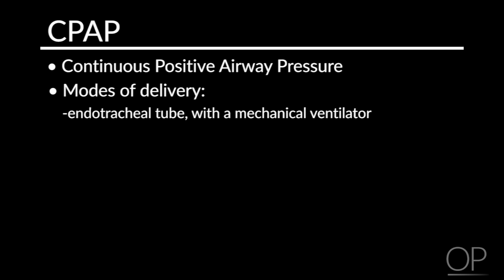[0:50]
Hi, my name is Tracy Walbrink, and I'm a Clinical Fellow in Pediatric Critical Care at Children's Hospital Boston. Today, I'll be demonstrating how to set up a bubble CPAP system.
CPAP stands for Continuous Positive Airway Pressure. It can be delivered in several different modalities, including via an endotracheal tube with a mechanical ventilator, through a nasal or mask interface in a CPAP machine, or via a bubble CPAP system, which I'll be showing you.
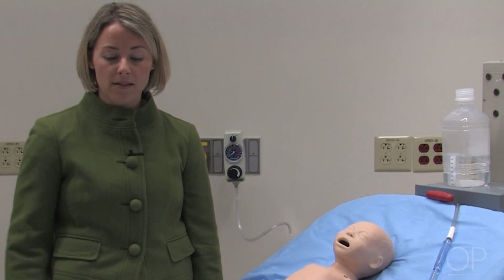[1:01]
I'll be using equipment to set this system up that should be readily available. However, you may need to modify the equipment and resources based on what you have available in your institution.
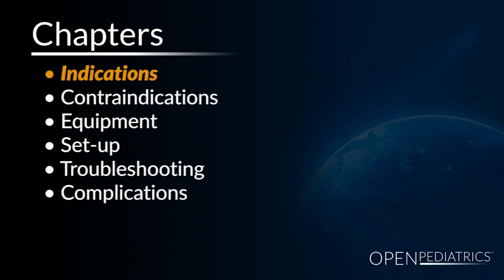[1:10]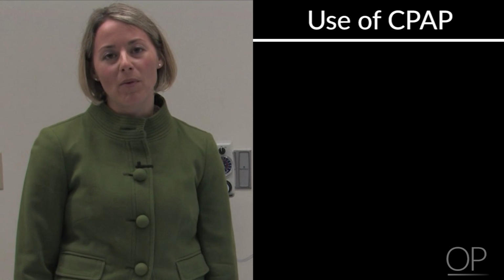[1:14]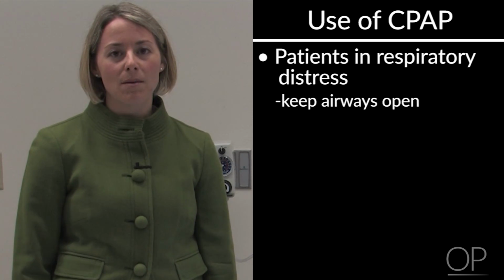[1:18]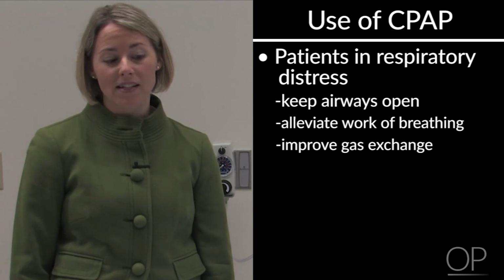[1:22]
Indications. Continuous Positive Airway Pressure can be helpful for patients in respiratory distress. It helps to keep the airways open and helps to alleviate the work of breathing, thus improving gas exchange and making it easier for the patient to breathe.
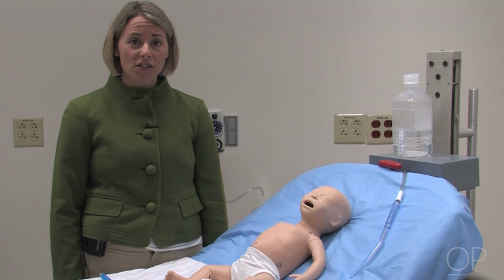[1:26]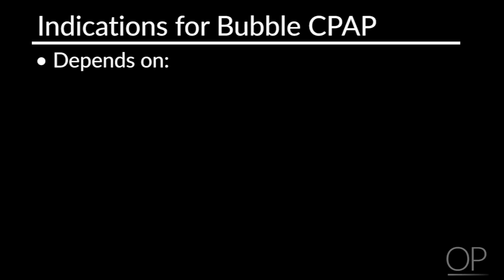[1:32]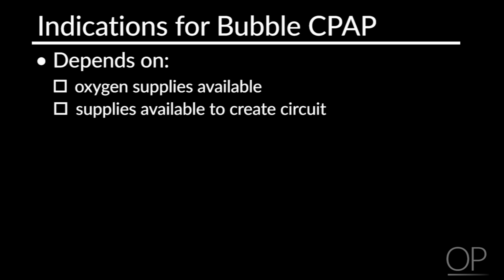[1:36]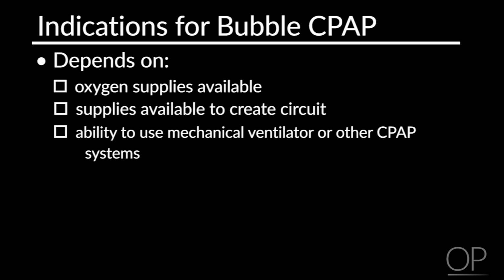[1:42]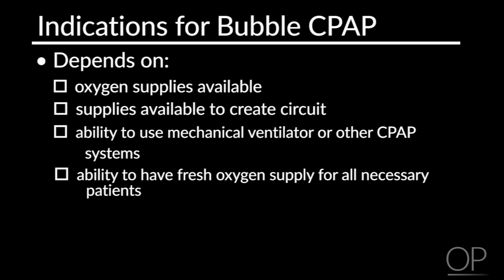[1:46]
At each institution, you'll need to decide what your indications for using bubble CPAP will be. It will depend on the amount of oxygen supplies that you have available, and the amount of supplies to create the circuit. Additionally, it will depend on your ability to use a mechanical ventilator or other CPAP systems, and your ability to have a fresh oxygen supply for all the patients that are necessary.
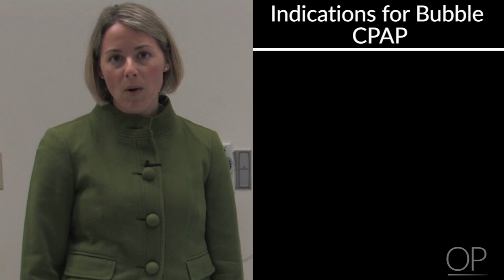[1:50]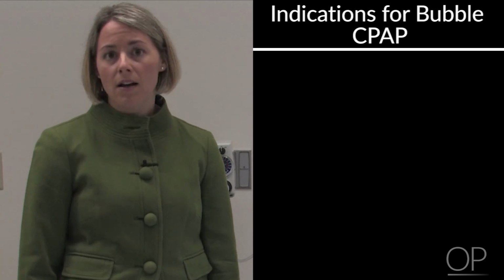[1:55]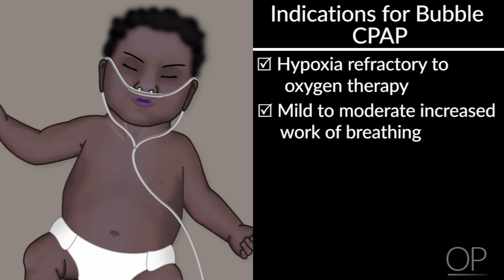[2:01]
In some hospitals, they find it helpful to use this on patients that are hypoxemic, which is refractory to oxygen therapy, or patients with mild to moderate work of breathing. In those patients, it may be helpful to step up from oxygen therapy and try a bubble CPAP interface to improve the work of breathing and gas exchange.
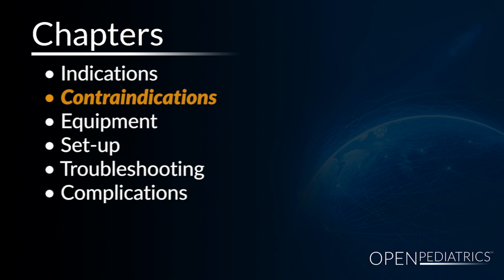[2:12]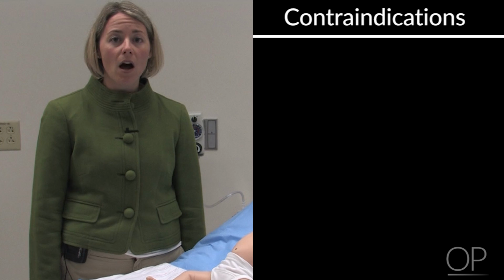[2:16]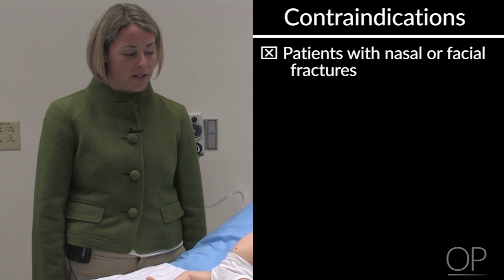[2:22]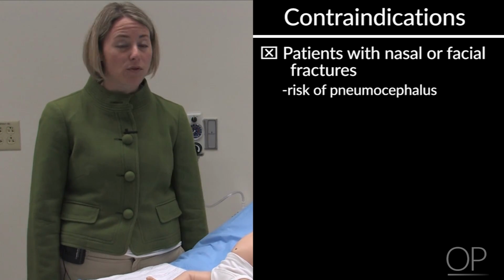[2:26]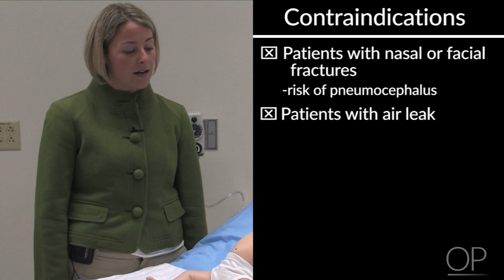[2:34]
Contraindications. There are several patients that you may not want to put on bubble CPAP. Those would be patients that have nasal or facial fractures because you risk causing pneumocephalus with using the positive airway pressure. You would also want to caution the use of bubble CPAP in patients that have air leak, such as pneumothorax or pneumomediastinum.
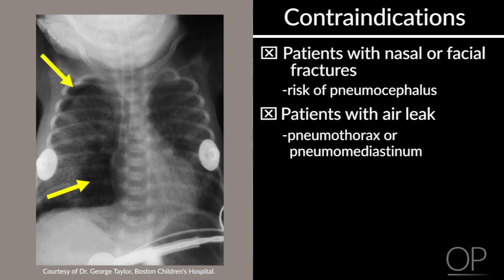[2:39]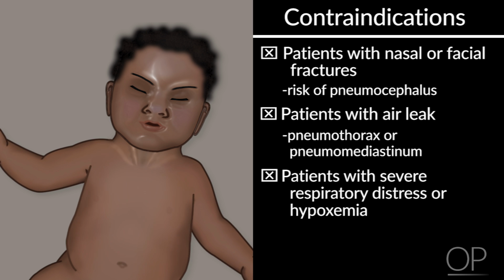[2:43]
And you would also want to consider other modalities if you have a patient that's in severe respiratory distress or severely hypoxic, as bubble CPAP may not be enough to help this patient.
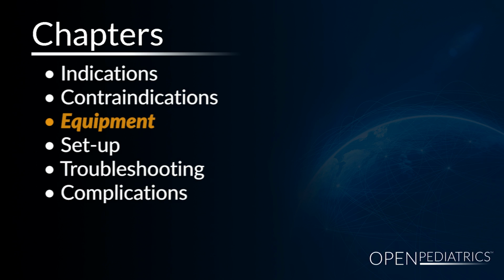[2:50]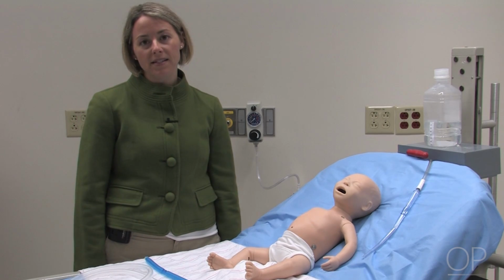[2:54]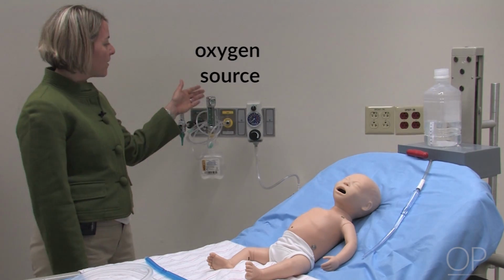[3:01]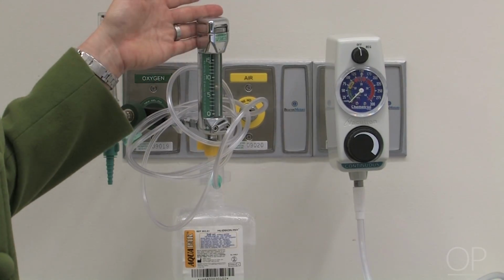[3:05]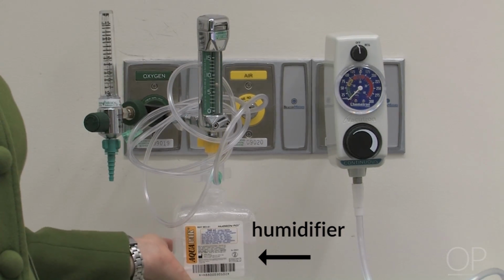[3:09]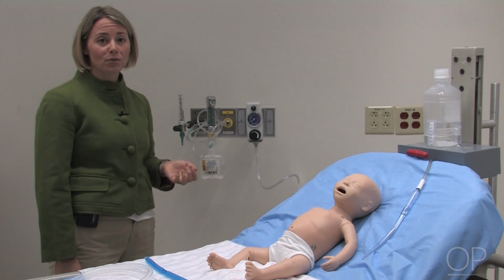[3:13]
Equipment. I'm now going to go over the equipment that's necessary to set up the bubble CPAP system. The first thing that you'll need is an oxygen source, and I have a source here that's connected to my in-wall oxygen. I've also attached a humidifier that will allow humidification to the baby, which will make the system more comfortable for the baby to breathe.
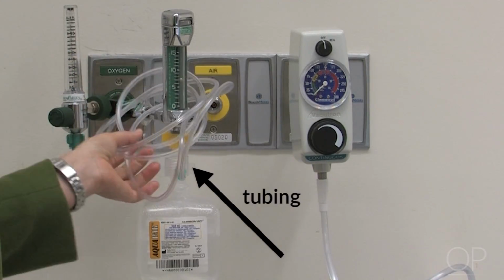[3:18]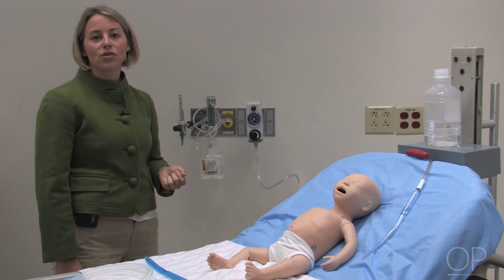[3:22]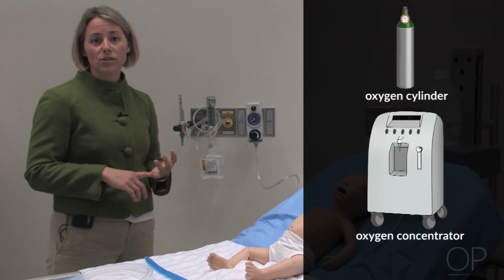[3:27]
You'll need some sort of tubing to connect this to the system. You can also use whatever type of oxygen source you have at your hospital, such as an oxygen cylinder or an oxygen concentrator, as long as you have enough flow to make the system bubble, which I'll explain in a few minutes.
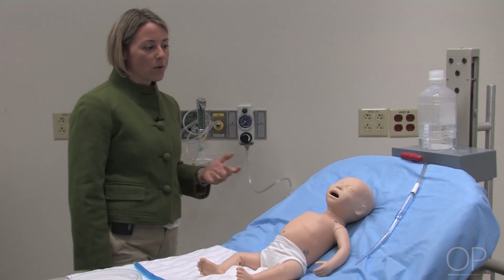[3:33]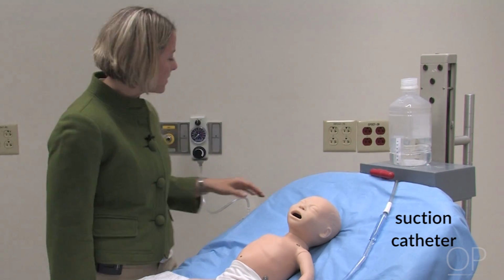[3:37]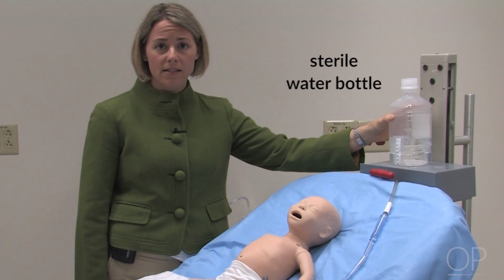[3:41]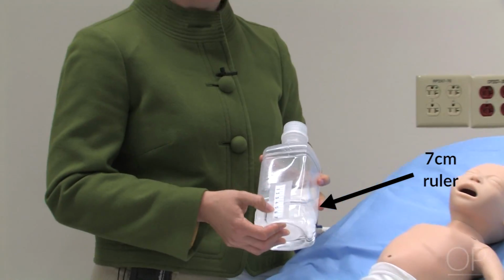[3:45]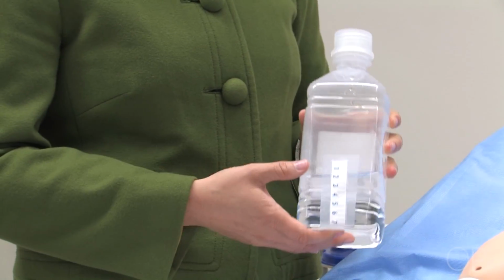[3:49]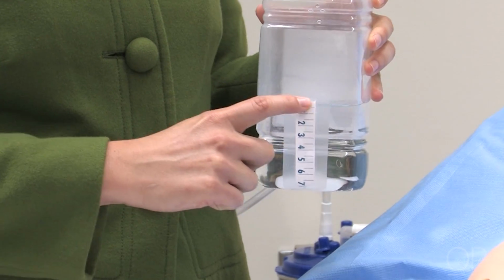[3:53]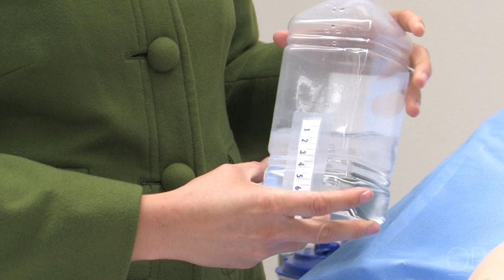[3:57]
What you'll also need is a suction catheter connected to a suction device, and you'll need a sterile water bottle, which here I have attached a 7-centimeter ruler to the bottom of this via tape. I filled the water bottle with sterile water, and as you can see, the meniscus of the water reaches the top of the ruler. You should make sure that you change your water at least once a day to help prevent the spread of infection.
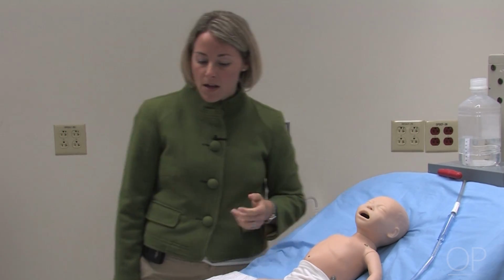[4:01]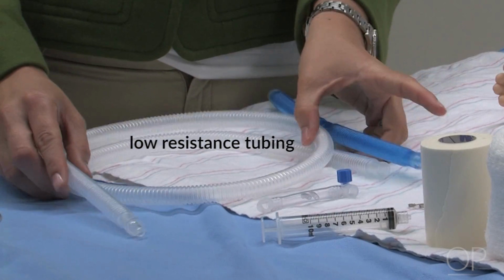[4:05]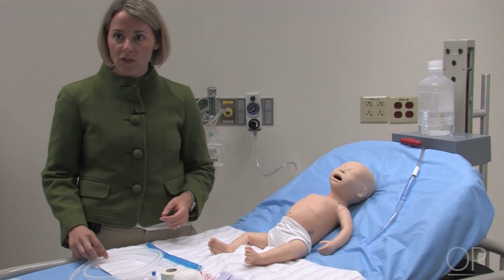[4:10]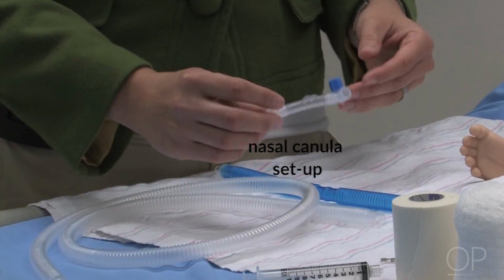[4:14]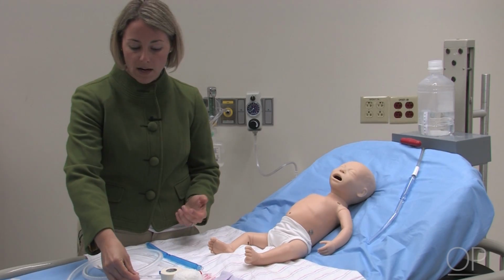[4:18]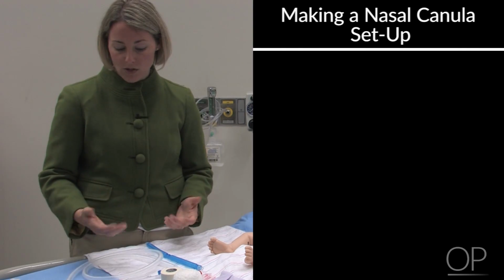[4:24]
The other pieces of equipment that you'll need, you'll need a low-resistance tubing, such as the corrugated tubing that I have here. You'll need two pieces, one for each limb. You'll also need a nasal cannula setup. This one here is a prepackaged bubble CPAP nasal cannula setup that you can purchase. You can also look around your hospital for other pieces of equipment that you can make such a setup.
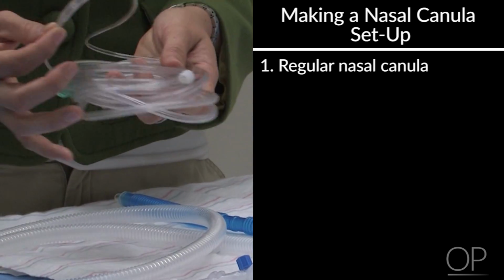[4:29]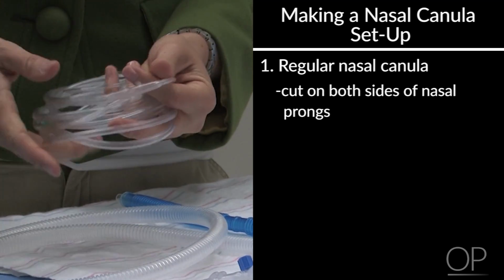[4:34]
And I've made one here using a regular nasal cannula for which I have cut on either side of the nasal prongs.
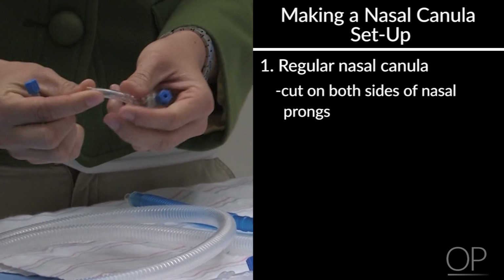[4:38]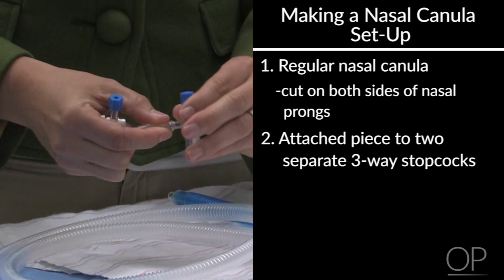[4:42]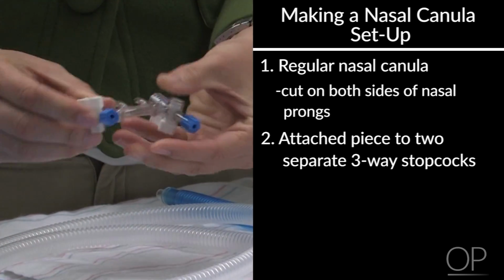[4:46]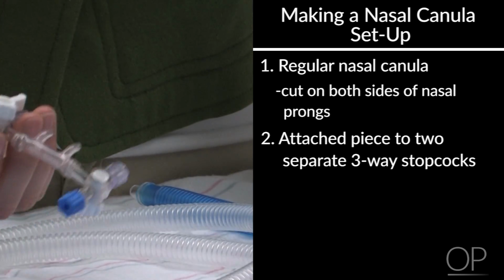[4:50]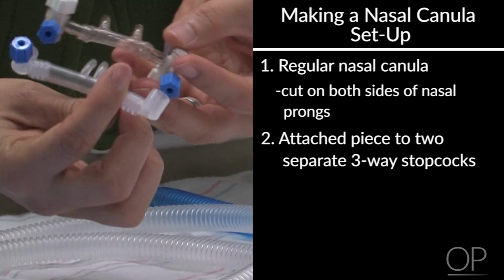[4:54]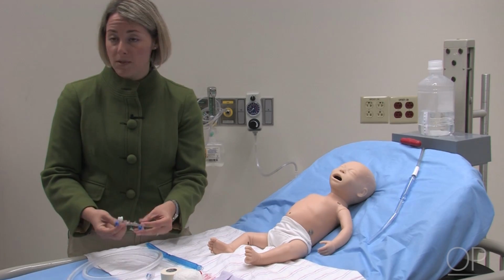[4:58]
And as you see here, I've cut each side, and then I've attached it to two separate three-way stopcocks. And I have a nasal cannula setup that looks very similar to what I have here. You'll notice that the distance between the nasal prongs is different for both of these interfaces, so you'll need to adapt that to which size patient you're using.
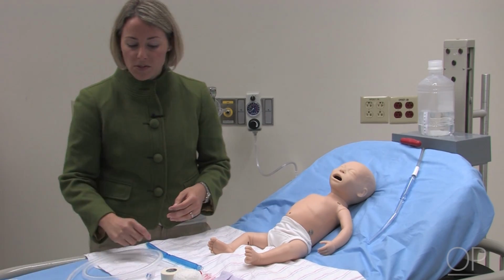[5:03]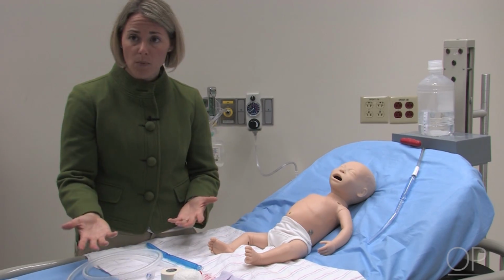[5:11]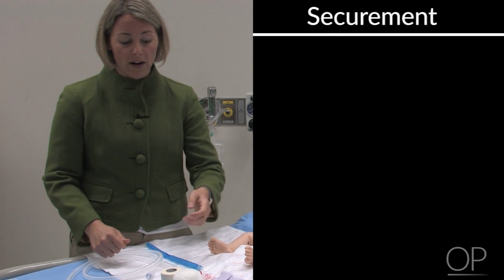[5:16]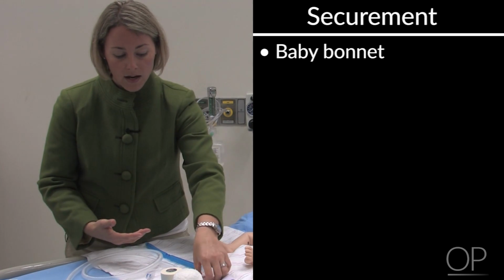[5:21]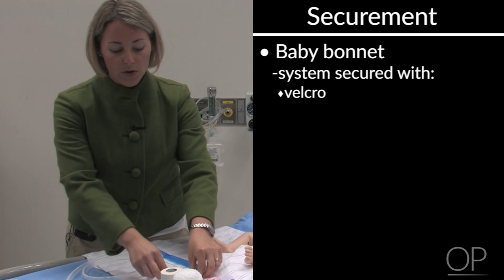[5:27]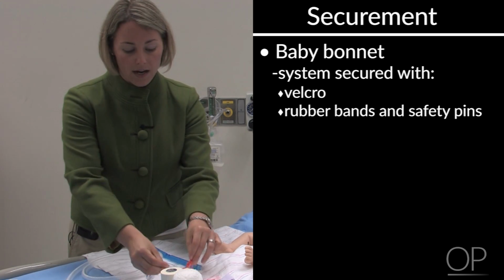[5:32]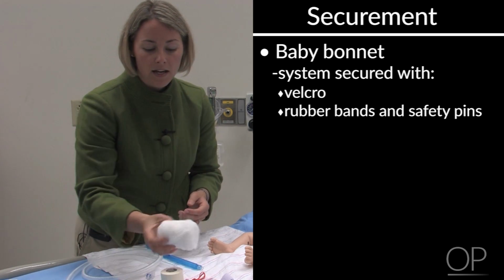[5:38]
You'll also need to have a 10 ml syringe, which will be used to secure the tubing in place in your bottle. And you'll need some way to secure this interface to your patient. There are many commercially available products, such as a baby bonnet that will go over the head, and I'll show you this, which will allow the system to be secured with either Velcro, or you can make a securing system with rubber bands and safety pins. You could also choose to not use a bonnet, and instead use some gauze to wrap the system in place.
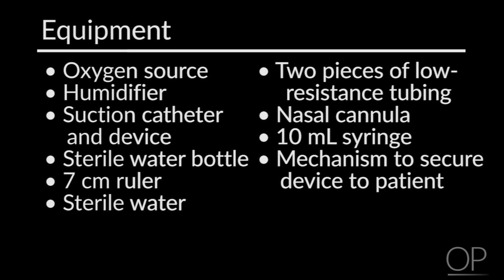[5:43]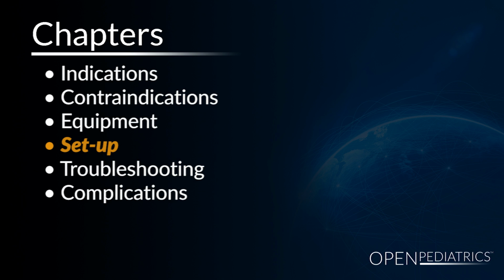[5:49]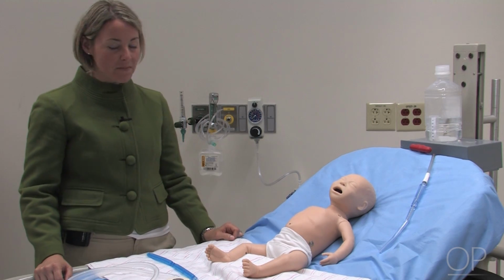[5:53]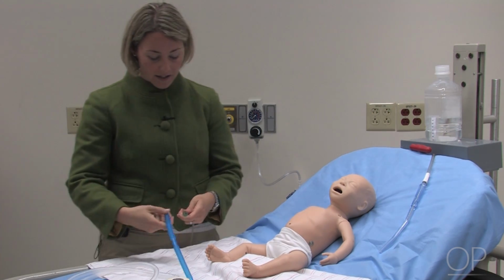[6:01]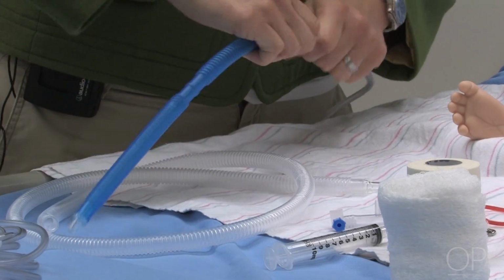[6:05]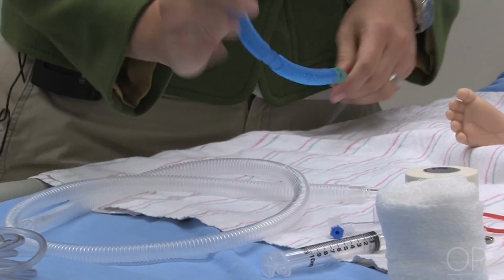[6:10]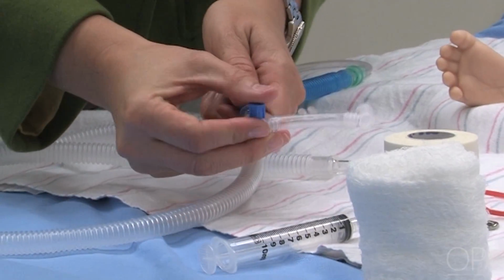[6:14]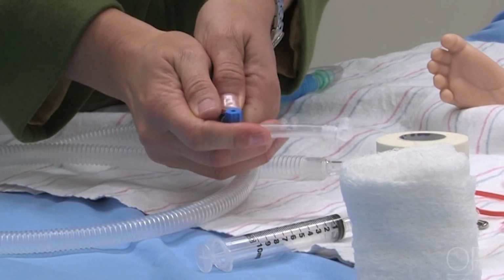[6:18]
Setup. So now I'll demonstrate how to set up your bubble CPAP system. First of all, you'll need to take your oxygen tubing that's connected to your oxygen source, and you'll need to connect it to one piece of your corrugated tubing, ensuring that you have a tight fit and the two tubings are not going to come apart. You'll then take the other end and insert your nasal cannula end into here, again, making sure that it fits tightly.
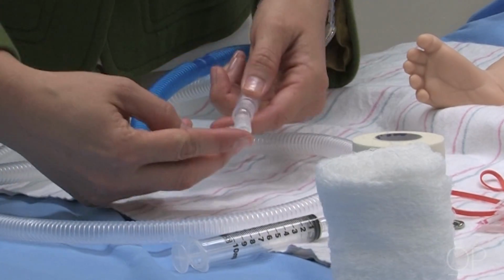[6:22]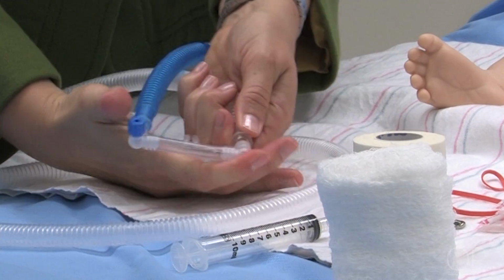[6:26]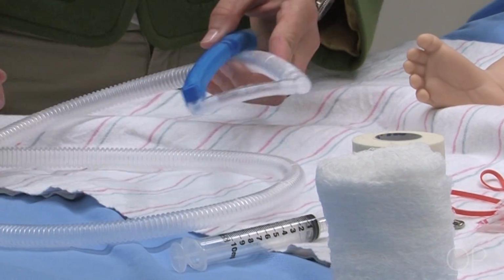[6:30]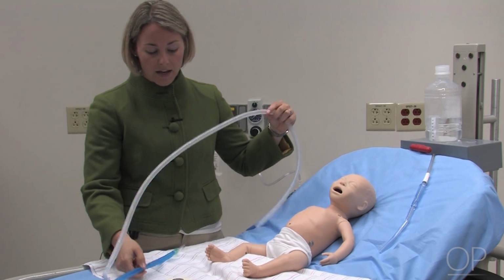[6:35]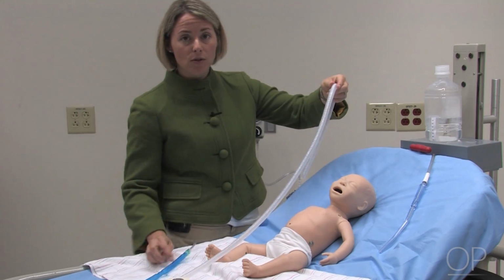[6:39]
You'll then take your other piece of corrugated tubing, inserting that on the other side of your nasal cannula, again, making sure that's tight. And this will be your patient interface. Your next step is going to be to put the end of the corrugated tubing, which is not connected to your oxygen source, into your sterile water bottle.
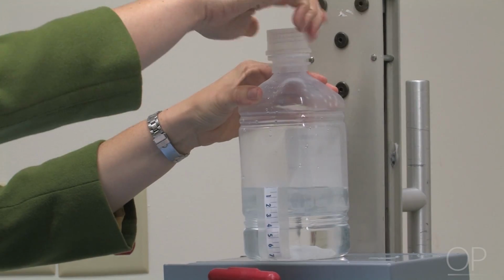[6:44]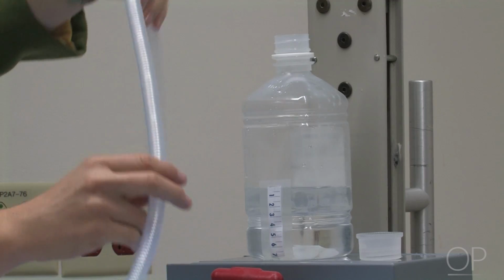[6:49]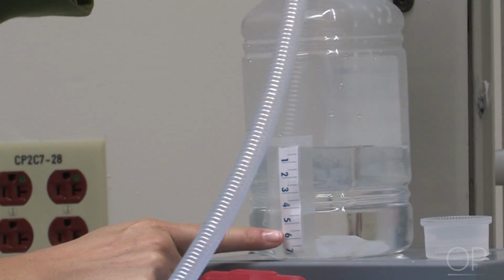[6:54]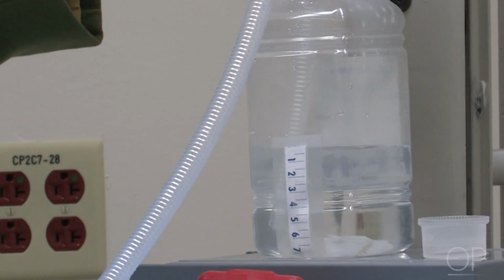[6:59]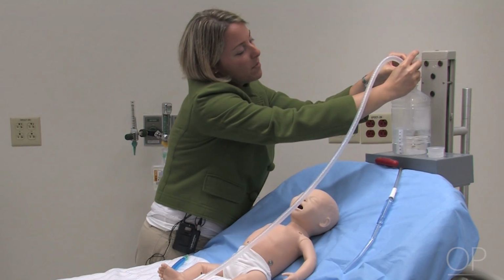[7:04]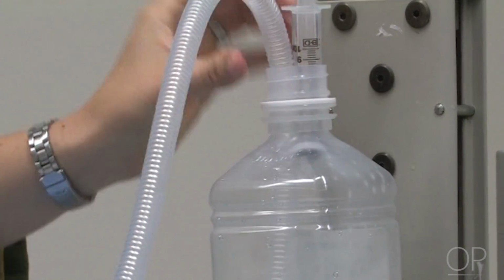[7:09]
So the first thing I'm going to do is unscrew the top of my water bottle, and I'm going to place the end of the tubing into the bottle and into the water to a depth of 5 centimeters. You can see the tip of the tubing is at 5 centimeters. And I'll take my 10 ml syringe, insert it into the top of the bottle. This will help to secure it in place and allow the tubing to stay at 5 centimeters. You also want to make sure that there's space for air to flow out of the water bottle and that you haven't occluded the opening completely.
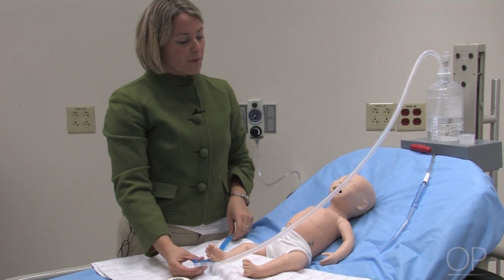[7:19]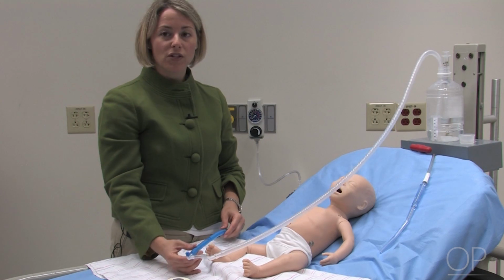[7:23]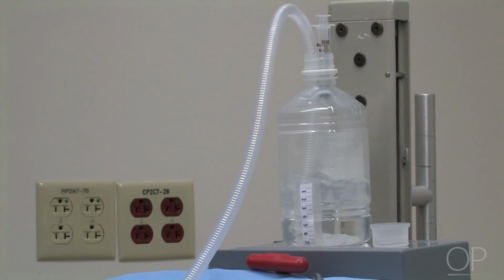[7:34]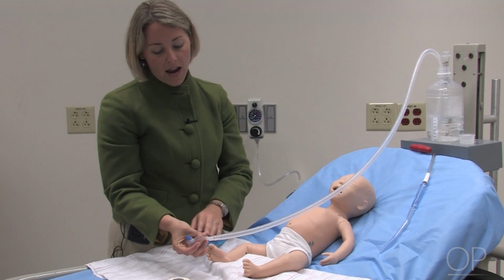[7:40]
Now, before attaching this to your baby, you're going to want to make sure that you test the system. You'll make sure that there are no leaks in the system. So you'll want to occlude your nasal prongs, and you'll want to look at your water bottle to make sure that it's bubbling. This will make sure that there are no leaks in the system and that everything seems to be connected properly.
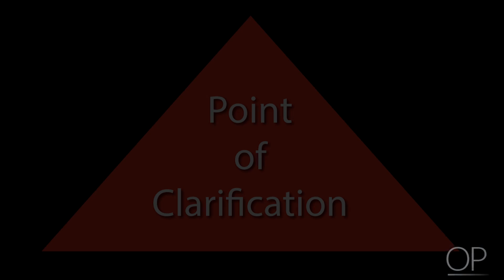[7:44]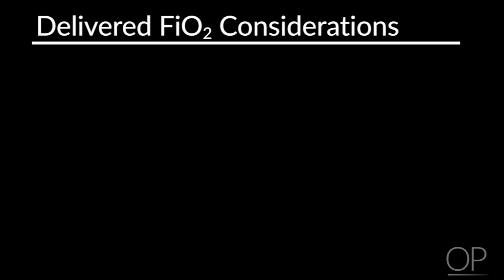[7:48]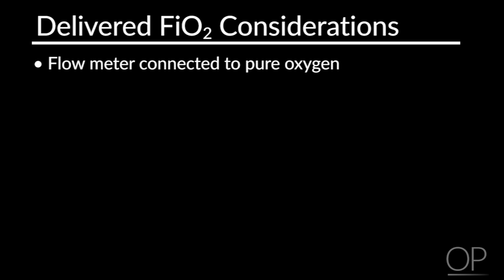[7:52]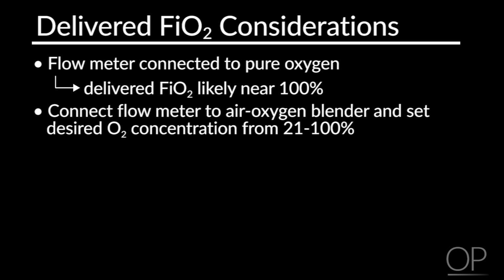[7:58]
Point of Clarification. It is important to consider the delivered FiO2 with this setup. If the flow meter is connected to a pure oxygen source, then the delivered FiO2 is likely to be near 100%. Ideally, the flow meter should be connected to an air-oxygen blender that enables the clinician to select the desired oxygen concentration from 21 to 100% oxygen.
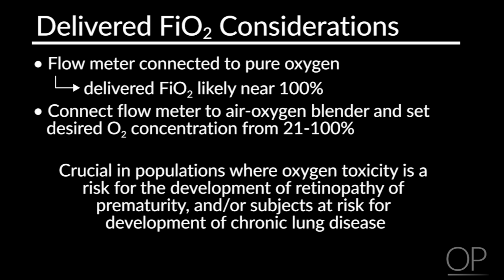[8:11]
This is crucial in populations where oxygen toxicity is a risk for the development of retinopathy of prematurity, especially those born less than 31 weeks gestational age, and or in subjects at risk for the development of chronic lung disease.
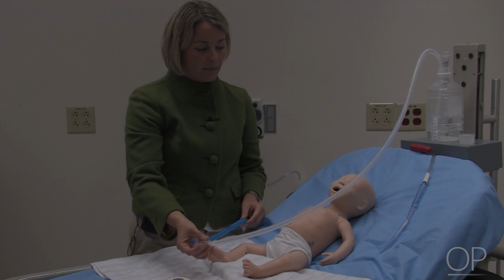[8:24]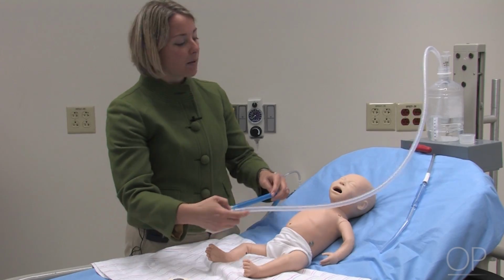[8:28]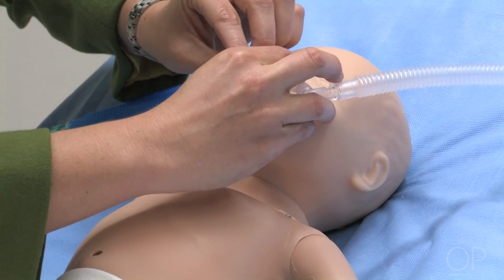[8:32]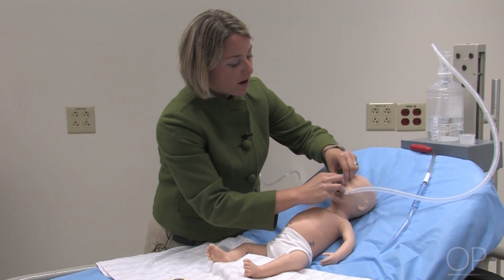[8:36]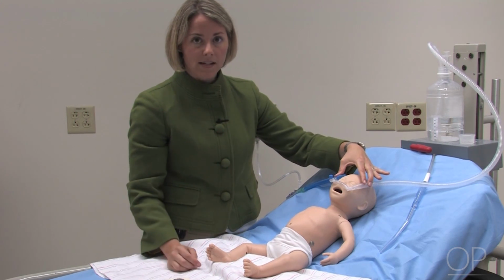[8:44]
The next step, and most challenging step, is to connect this to the baby. So what you'll do is you'll take your nasal prongs, and you'll insert them into the nares of the baby. Most likely, the baby will be crying and kicking and squirming around. So it's helpful to have a parent who can soothe the child or an assistant to help you connect that.
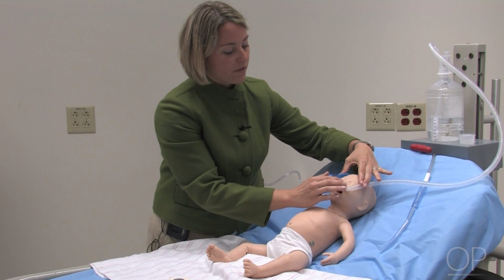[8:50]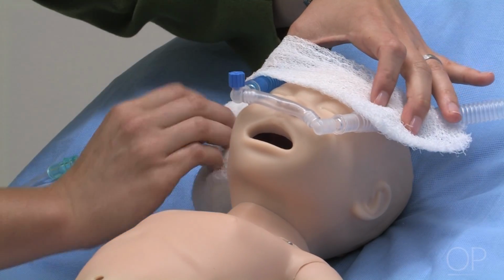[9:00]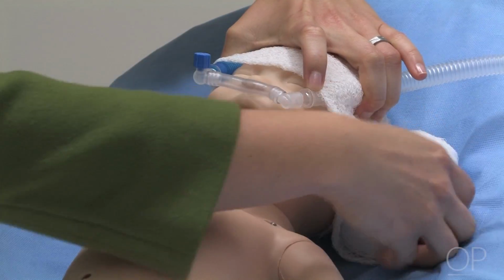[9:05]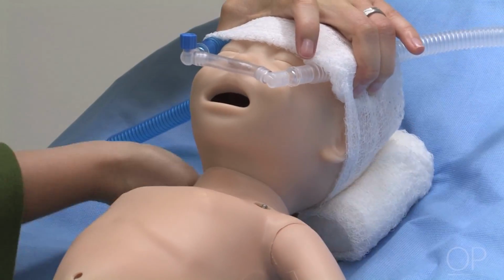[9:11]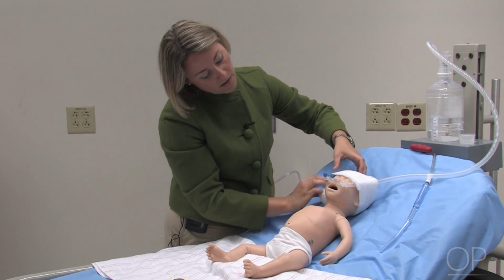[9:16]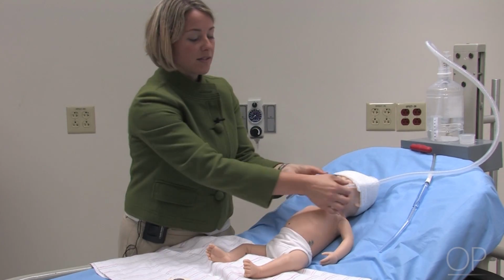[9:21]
And in order to secure the system to the baby's face, there are multiple ways we can do this. I'm just going to show you a simple way using some gauze. You can take the gauze and wrap it around the system and around the baby's head, ensuring that it's a tight fit. You want to make sure to avoid the eyes or the mouth, and you can cut that when it's finished. This should ensure that the system will stay in place and will not move too far from the baby.
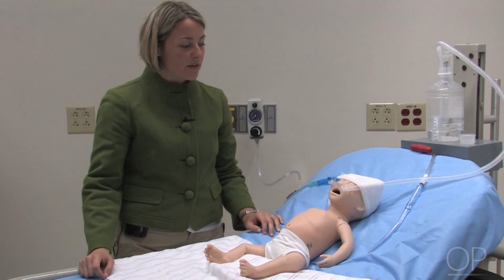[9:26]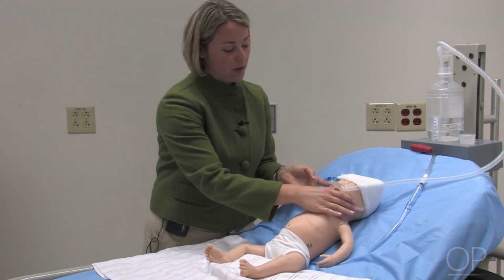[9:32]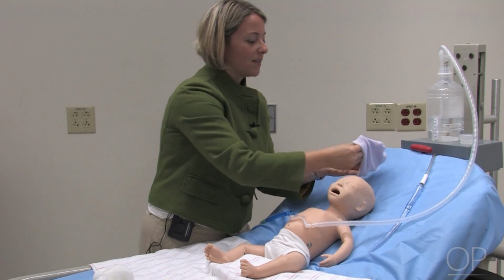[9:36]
So I've showed you how to secure the nasal cannula with some gauze, but I'll also show you how to do it with a baby bonnet. It's helpful if you put the bonnet on before you begin placing the nasal cannula, as it can sometimes be a challenge to put on a baby who's moving their head all around.
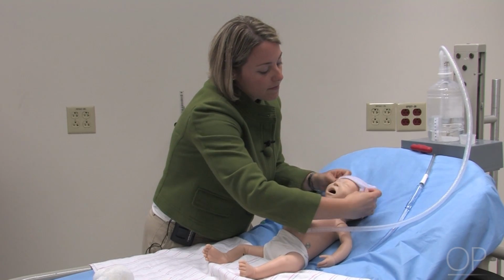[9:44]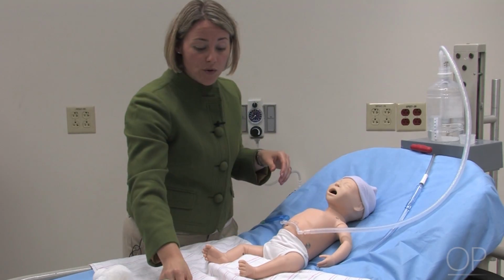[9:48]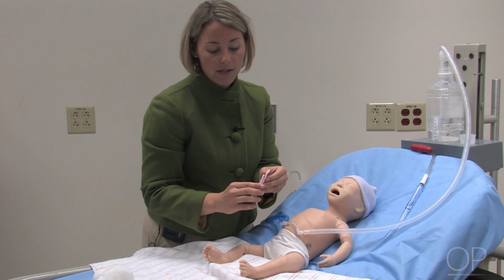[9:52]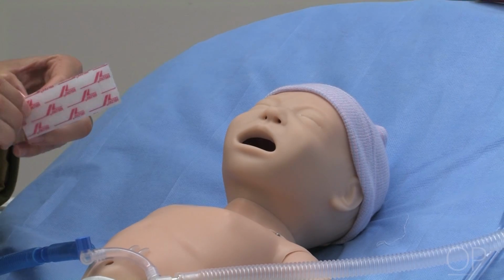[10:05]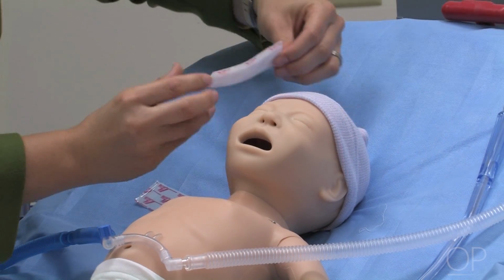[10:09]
You can do one of two things to secure this. You can either use something like Velcro, which you can see I have two pieces of Velcro here that are sticky on one side and Velcro on the other. And I will just stick this Velcro on one side of the baby bonnet.
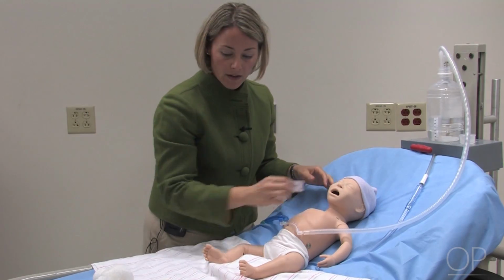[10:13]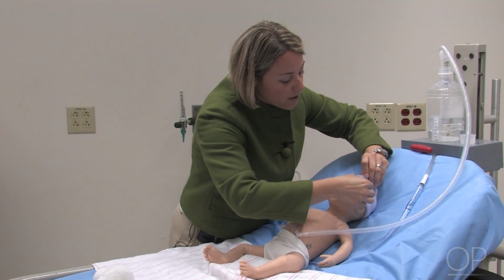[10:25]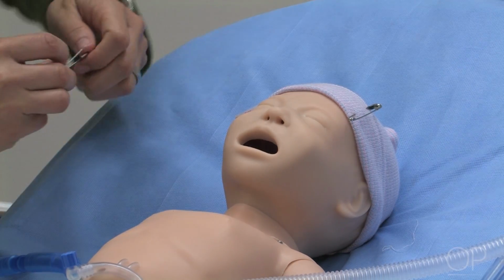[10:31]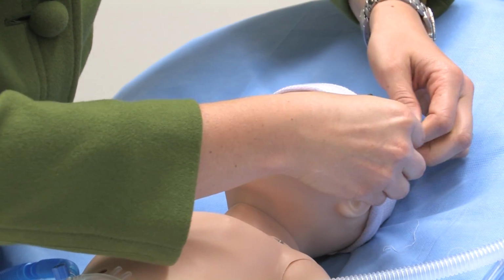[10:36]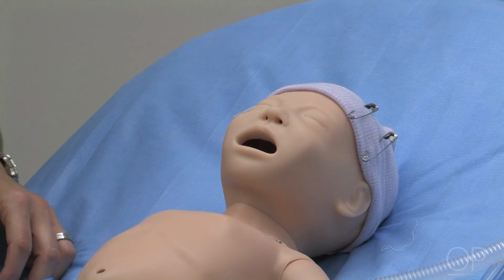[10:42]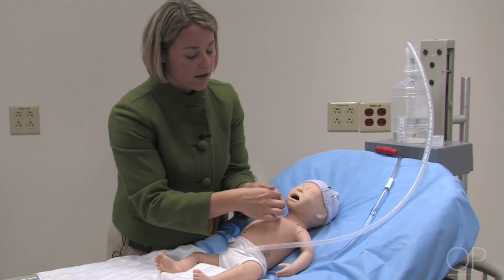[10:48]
Alternatively, you can use two safety pins and a rubber band to secure each side of the corrugated tubing. You'll want to place the safety pins first on the side of the baby's head, and you'll want to make sure that the tubing will run between the safety pins. You'll want to be careful when you place these that you're not going through the bonnet all the way and injuring the baby's skin. Then you'll take a rubber band, tie a knot in the middle, and you'll have this available for when you put the nasal cannula set up on the baby's face. So I'll set that right there for this moment.
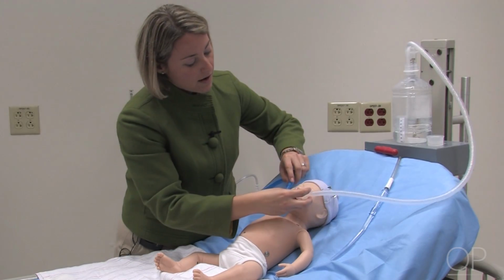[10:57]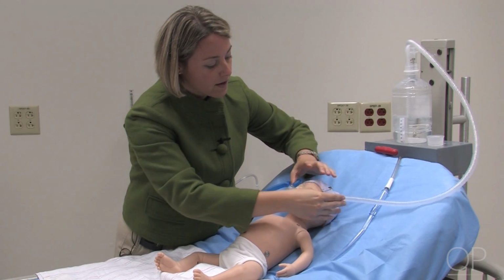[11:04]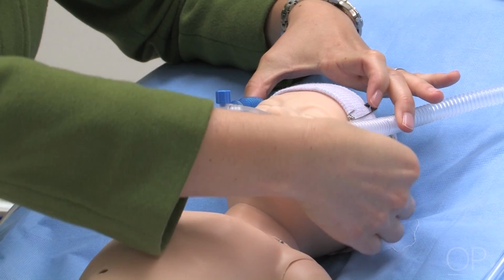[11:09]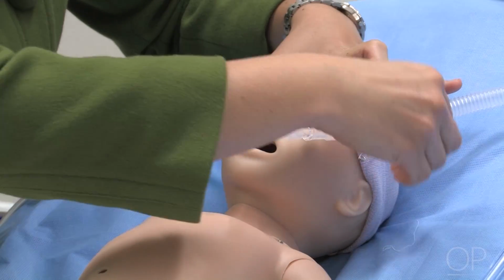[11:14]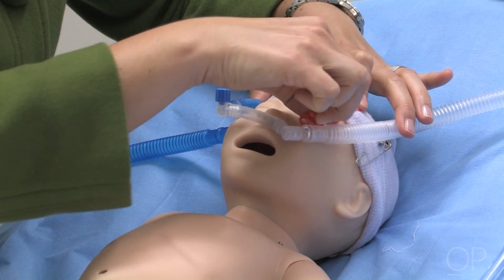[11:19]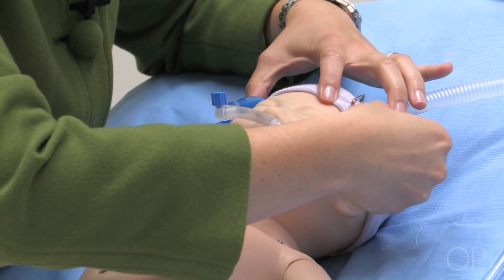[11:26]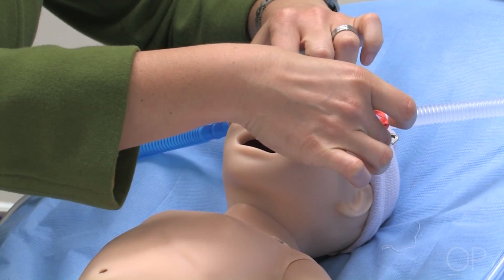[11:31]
Next, I'm going to place the nasal cannula in the baby's nares, as I did previously. And you can see here that the tubing runs between both sides of the safety pins. I'll take my rubber band, connect it around the safety pin on one side, and again, I'll take this, wrap it around the safety pin on the other side, and this will create a resistance for the tube to move.
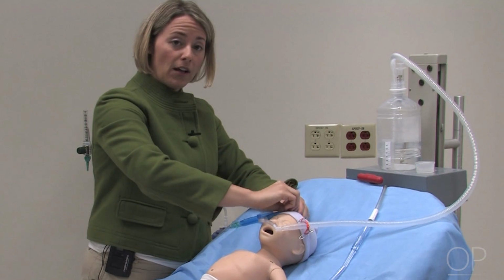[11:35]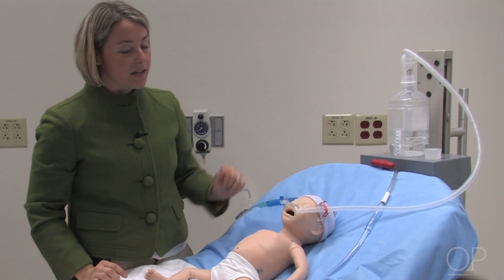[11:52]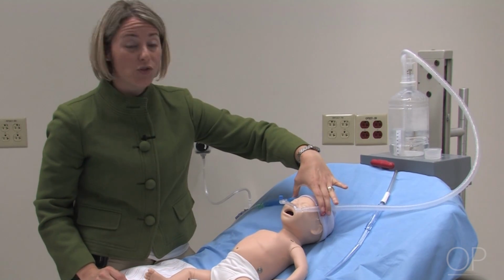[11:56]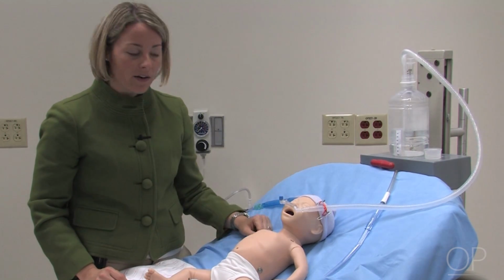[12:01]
Additionally, I'll show you for the sake of demonstration purposes on the other side, I'll remove the top piece of Velcro, I'll place the nasal cannula set up through the Velcro, and again, attach that. So there are many ways that you can use to secure the nasal cannula in place to the baby, but it's just very helpful to secure it. If this comes dislodged, the cannula will come out, and you won't be delivering any of the positive airway pressure.
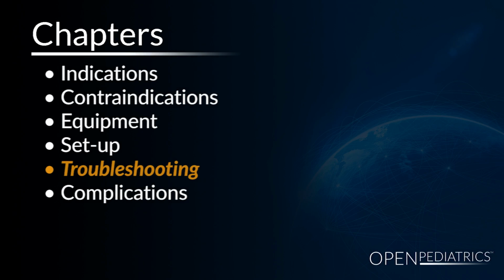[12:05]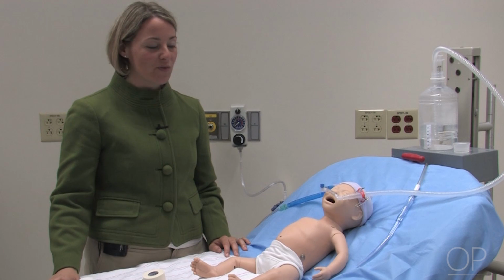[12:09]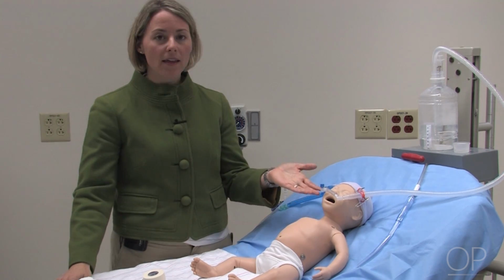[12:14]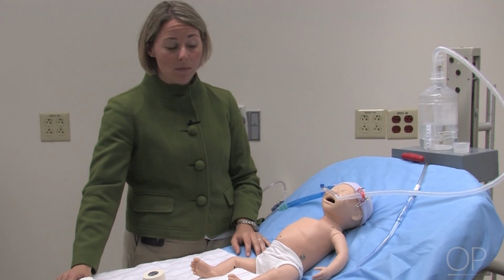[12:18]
So now I'll go over some troubleshooting tips for your bubble CPAP system. As you look at this system, we can see that the baby is connected to the bubble CPAP system. However, the bottle is not bubbling. This is indicating that we have a leak somewhere in our system.
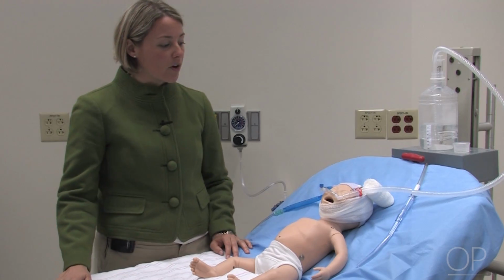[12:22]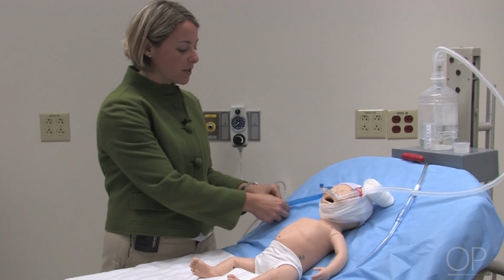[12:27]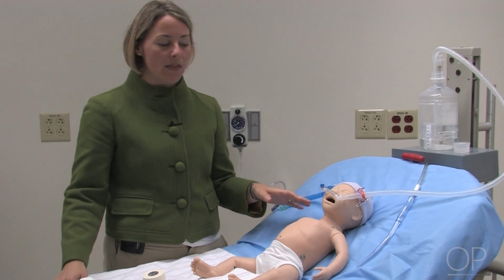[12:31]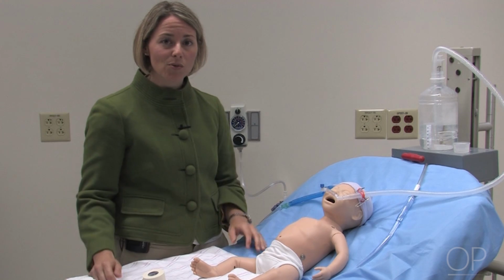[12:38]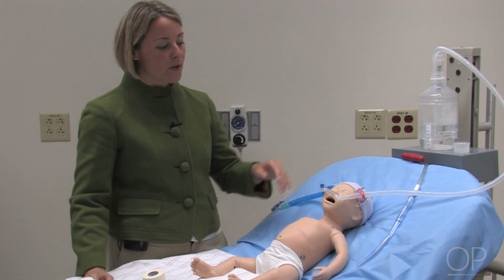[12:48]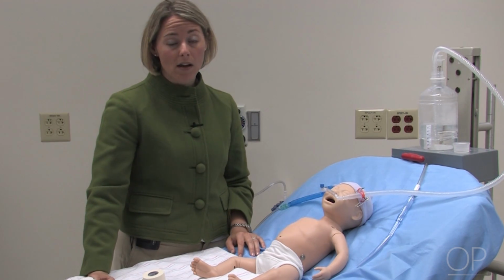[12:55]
First of all, you may have complications with the circuit itself, where some of the parts may become disconnected. We did check the system prior to placing it on the baby, and we know that our system is completely connected, and that there is no leaks in the plastic, and that all of our connections were tight. Therefore, we must assume that the leak is with the patient itself. And there are a couple areas that the patient can leak from. One is through the nares and the nasal cannula interface, and the other is through the mouth if the baby is doing open mouth breathing.
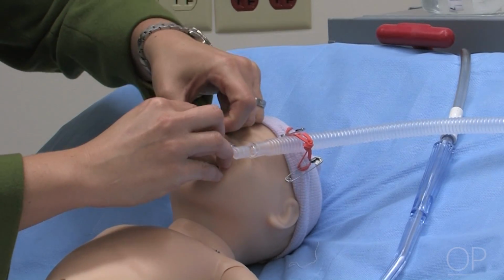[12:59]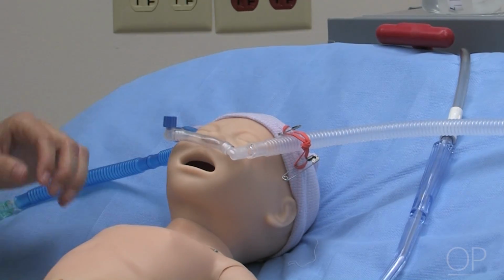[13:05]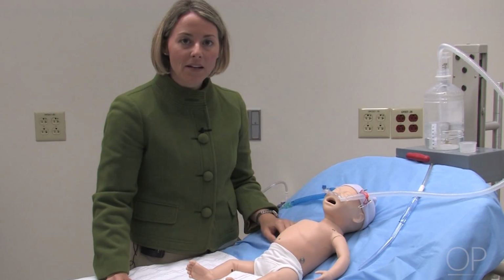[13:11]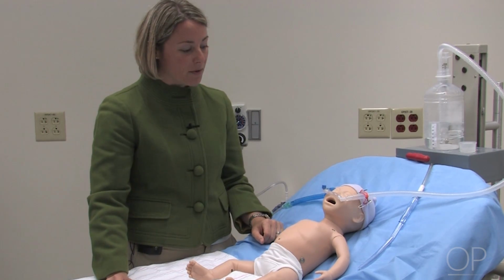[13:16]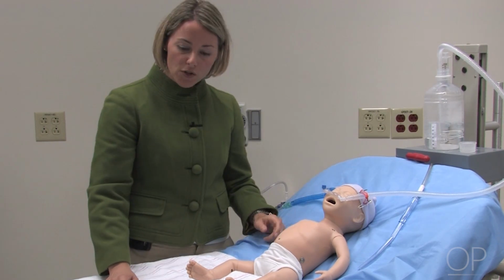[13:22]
First of all, I'm just going to reposition the nasal cannulas to see if we can get a better fit. And you can see here, just by making sure that the nasal cannulas are indeed in place in the nares, you do get bubbling in the system. So that was the trouble that we had with this baby. Now, if by placing the cannula in the nares, we still weren't getting bubbling, we could try a couple of things.
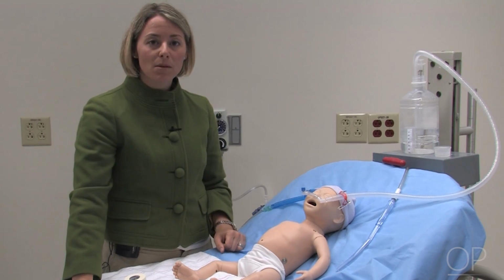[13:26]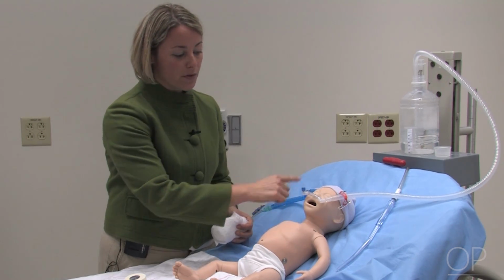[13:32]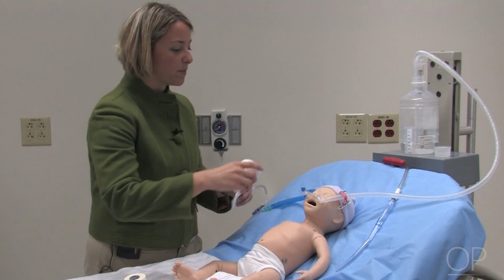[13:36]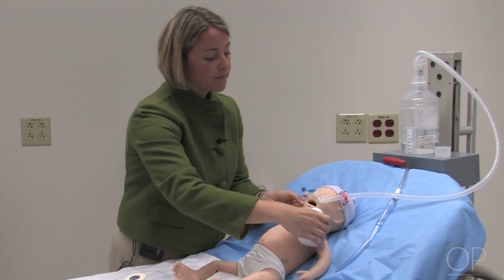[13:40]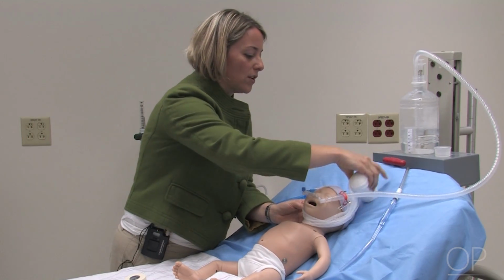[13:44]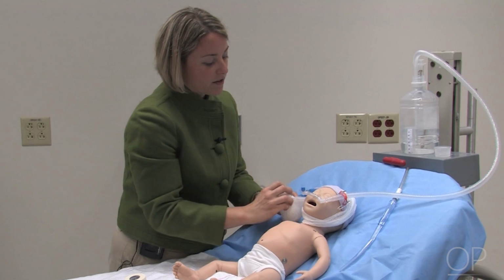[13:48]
The first thing that you notice with this baby is that the baby is open mouth breathing. And this could also be a loss of positive airway pressure because the pressure is going in through the nose and coming out of the mouth. So another thing that you can do to help this baby is to place a chin strap. I'm just going to use gauze. You can use whatever you have at your institution. I'm just going to wrap this gently around the baby, making sure not to dislodge the nasal cannula in the process. And I'm going to wrap it around here.
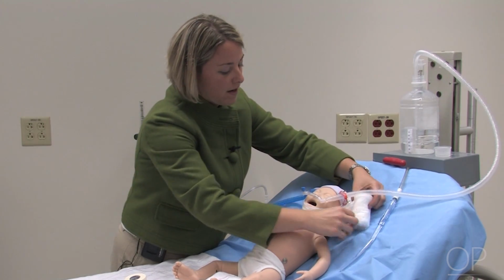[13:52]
And in a regular baby, this would help to keep the mouth closed. I'm just going to readjust the nasal cannula in place here, making sure that they're in. There we go.
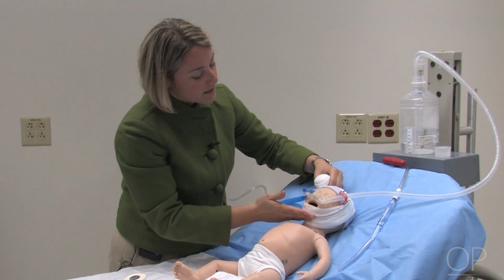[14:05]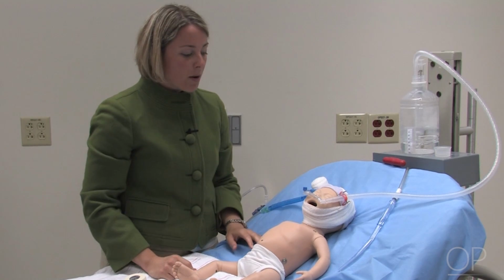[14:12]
And you want to make sure that this chin strap is tight enough so that it closes the baby's mouth, but not so tight that the baby is unable to cry, yawn, or vomit, because you wouldn't want the baby to aspirate if the baby did vomit.
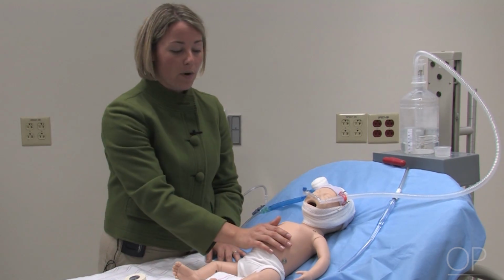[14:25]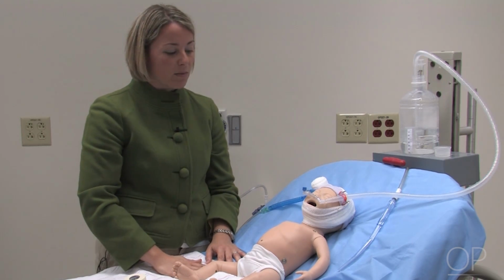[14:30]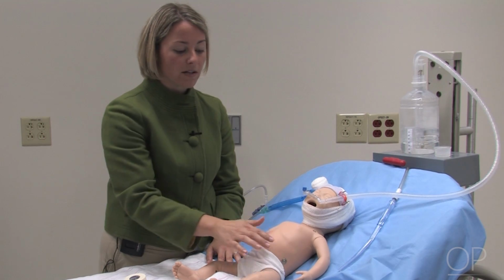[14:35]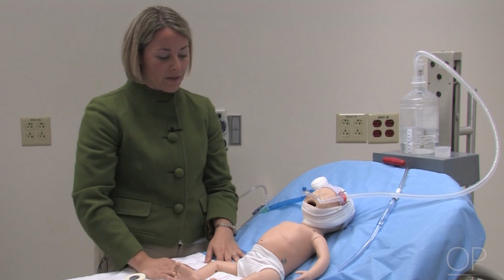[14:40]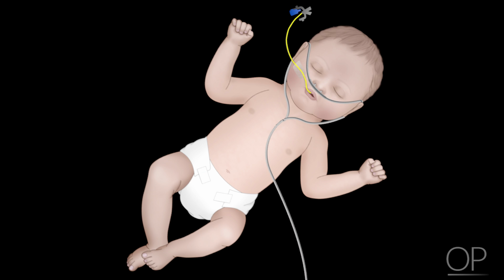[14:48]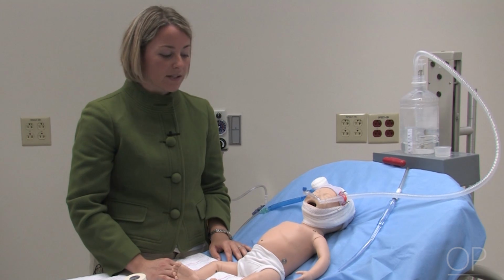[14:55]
Some other troubleshooting tips. You want to watch for abdominal distension. As you're providing positive airway pressure into the baby, there is a chance that some of this airway pressure is not going only to the lungs, but is also going into the stomach. With that, you may get some gastric distension, and the baby may be very uncomfortable with that. So you could consider placing an orogastric tube or even a nasogastric tube and use one nasal cannula side only. This will help to alleviate some of the abdominal distension. Many babies will tolerate an orogastric tube.
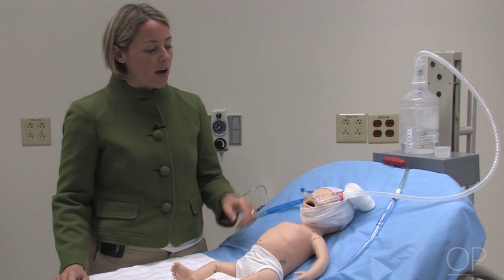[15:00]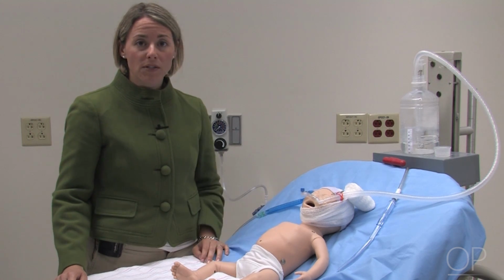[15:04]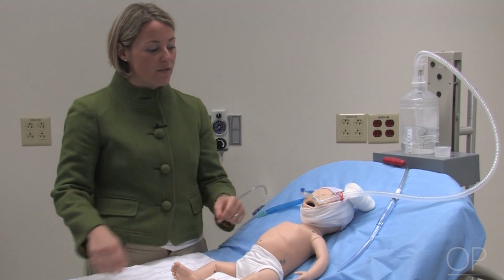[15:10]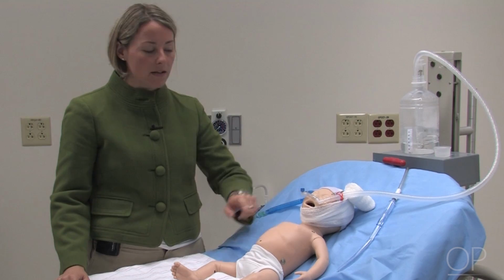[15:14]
You may have some plugging of the nasal cannula with secretions, and so it's important that at least once per shift, you take the baby off and clean the nasal cannula, making sure that the secretions aren't building up in the nasal cannula system.
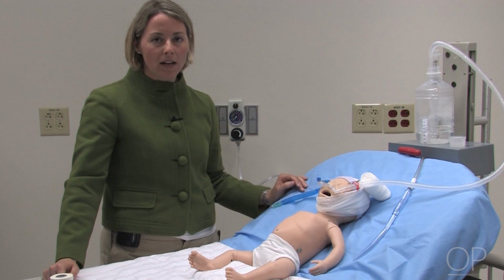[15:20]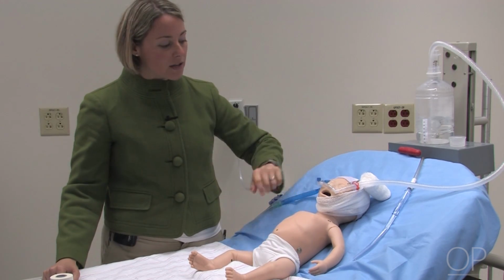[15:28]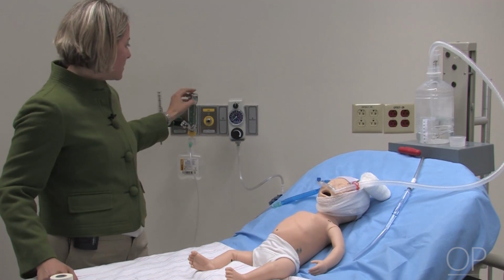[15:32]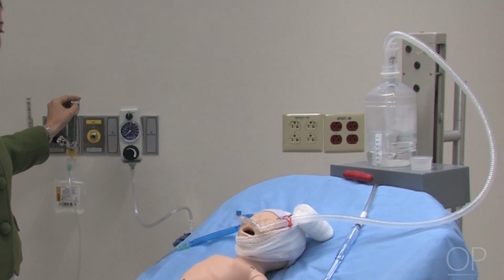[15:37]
And the last thing that you'll want to do when you're troubleshooting is to look at the quantity and quality of your bubbling in your circuit. As you see here, there's quite a lot of bubbling now that we have an occlusive nasal cannula in place and a chin strap on our baby. So you can dial down your oxygen a bit to the point where you're getting just a nice, gentle bubbling like you see here.
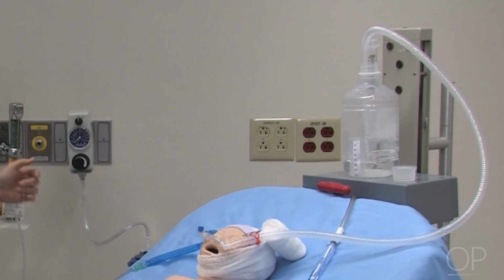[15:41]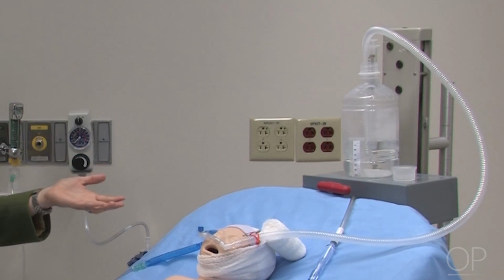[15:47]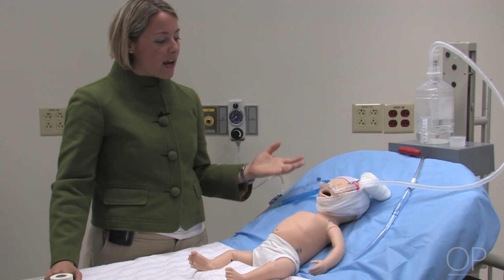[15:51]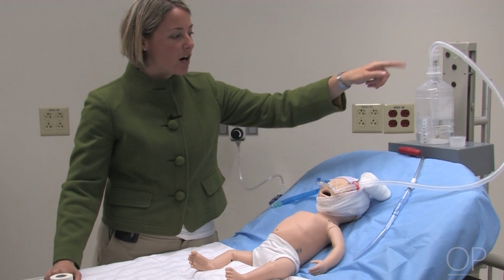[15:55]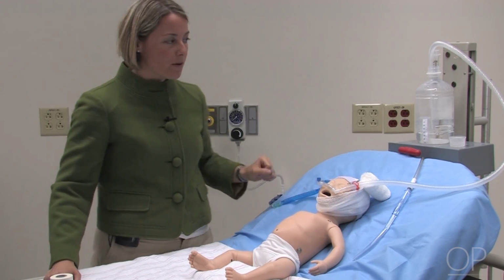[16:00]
You'll notice if you turn down the oxygen too much or even turn it completely off, you lose the bubbling. And in this way, you're not delivering enough oxygen to the baby, and the baby may actually be rebreathing CO2 because they're not able to push the carbon dioxide out the expiratory limb into the bottle.
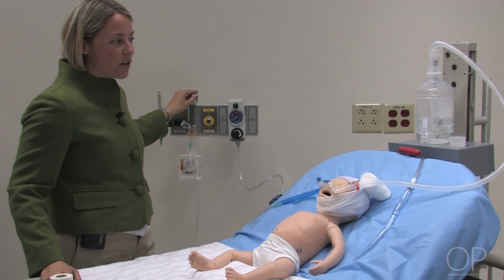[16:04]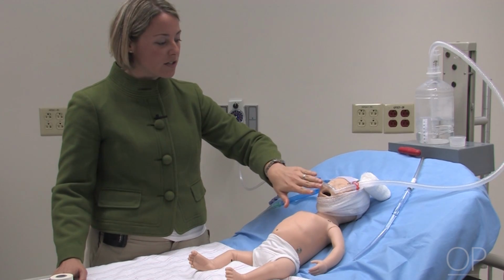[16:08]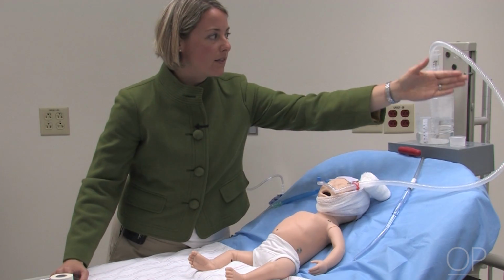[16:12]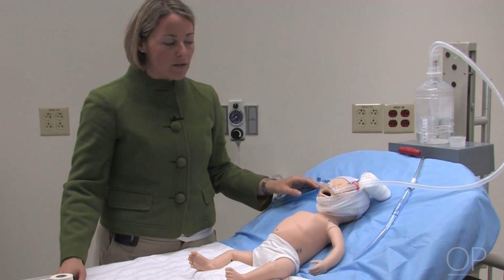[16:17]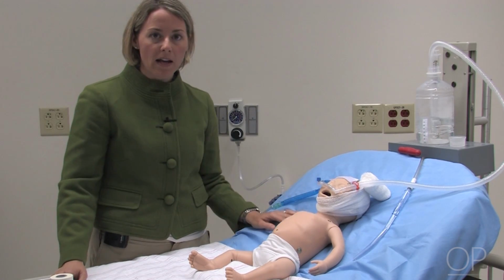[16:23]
So you'll want to make sure that your flow is high enough, that you're getting enough bubbling so that you're able to deliver oxygen into the patient and that when the baby exhales through the nasal cannula, they'll exhale in the exhalation loop and exhale carbon dioxide out into the bottle. So it's very important that there's an adequate amount of bubbling. The baby may also exhale some carbon dioxide out their mouth, but if you have a chin strap in place and you're trying to keep their mouth closed, you may not have enough carbon dioxide removal.
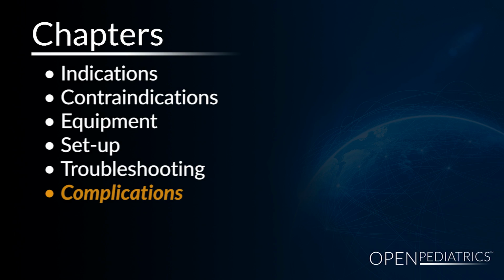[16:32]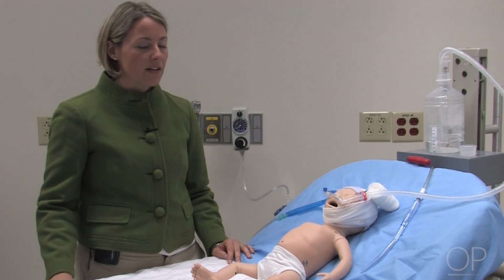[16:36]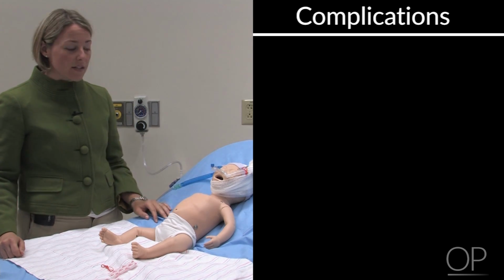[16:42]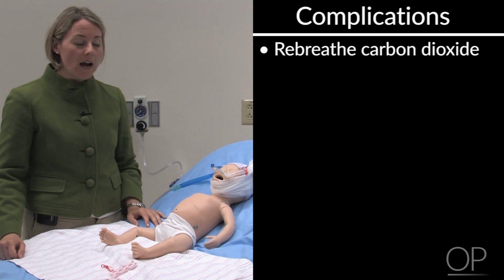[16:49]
Complications. The last thing that I'll discuss is some of the complications you may encounter while you have a patient on bubble CPAP. As we discussed previously with the troubleshooting video, if you don't have enough gas flow going through the patient, you may rebreathe carbon dioxide, which would not be very helpful for these patients.
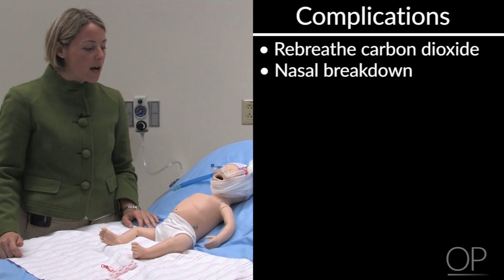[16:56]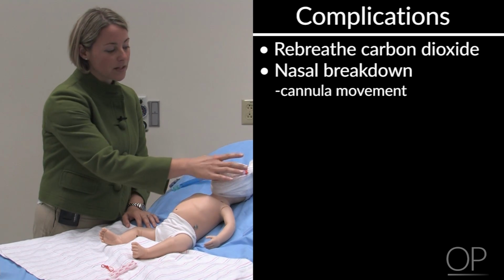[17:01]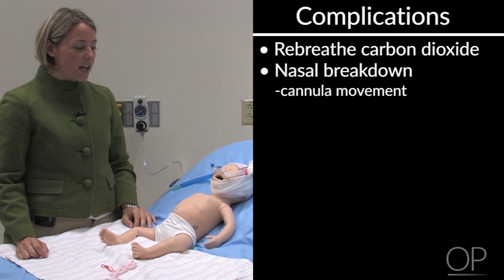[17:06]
You may also develop some nasal breakdown by using this system, especially if your cannula is moving quite often. That's why it's very important to secure this to the baby's head. Also, if you have a cannula that is not the right size and is moving around inside the nares or is very stiff, you may develop more nasal breakdown. And additionally, if you're using non-humidified oxygen, it may be more uncomfortable and more drying to the nares, which can promote more nasal breakdown. So if you have the capabilities to use humidified oxygen, it's generally safer and more comfortable for the patient.
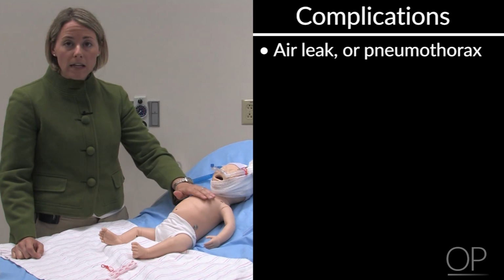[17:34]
You may also develop an air leak, such as a pneumothorax. You'll want to watch for that. Notice if your baby develops increased work of breathing, hypoxia, or diminished breath sounds. You want to make sure that you think about pneumothorax as a possible complication.
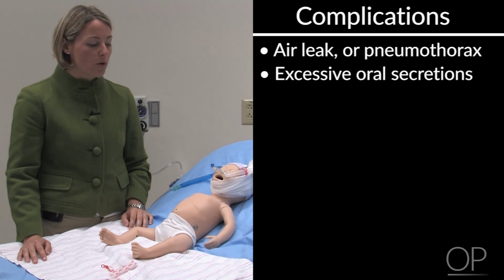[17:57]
Additionally, you may find when you put a patient on nasal cannula CPAP for the first time that the baby develops a lot of excessive oral secretions. That's normal, and that's as the positive airway pressure is building in the oral cavity. Some of the secretions are forced out of the mouth. You can reassure the parents and the patients that this is normal and should go away after four to six hours.
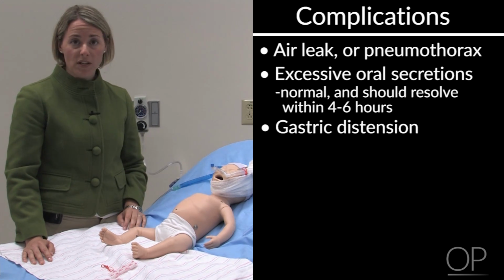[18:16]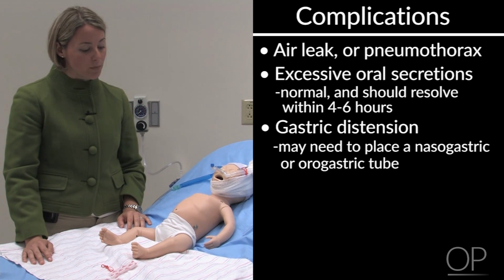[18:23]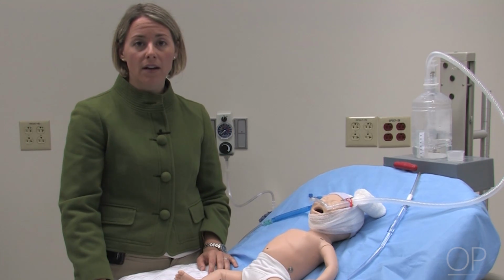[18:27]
Finally, you may notice gastric distension, as we discussed in the previous segment, and you may need to place a nasogastric or an orogastric tube in order to help alleviate that. So this concludes the video on bubble CPAP.